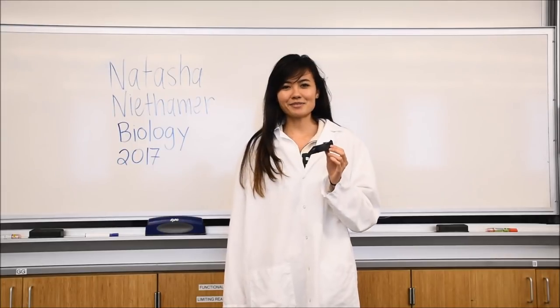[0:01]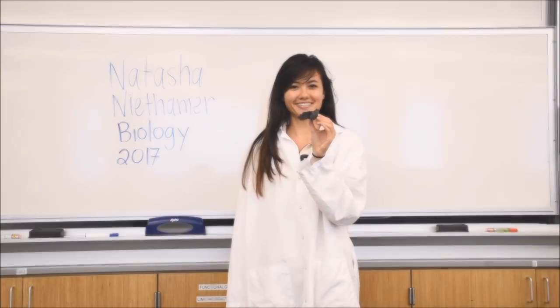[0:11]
Natasha Niethamer, and I am a biology major from the class of 2017. Today, I am going to be showing you how to assemble and use a cell phone spectrophotometer.
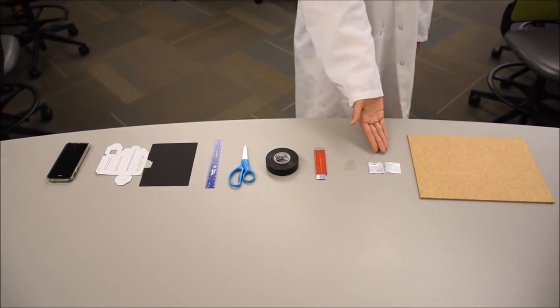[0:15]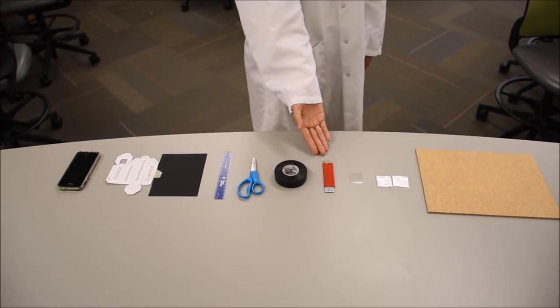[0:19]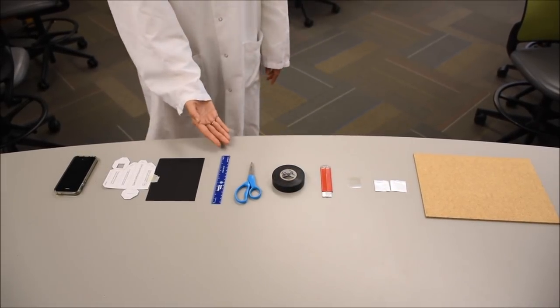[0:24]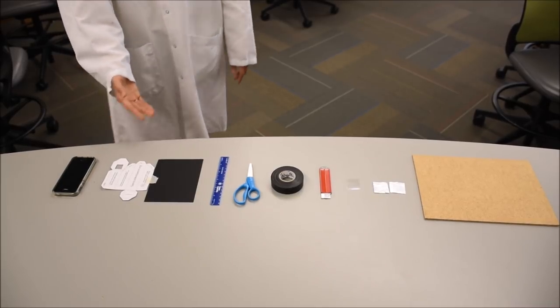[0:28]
Things you will need: cutting board, aluminum foils, diffraction grating, razor, electrical tape, scissors, ruler, black paper, template, last but not least, iPhone. Now, before we get started, it's absolutely crucial that if you decide to use a razor blade
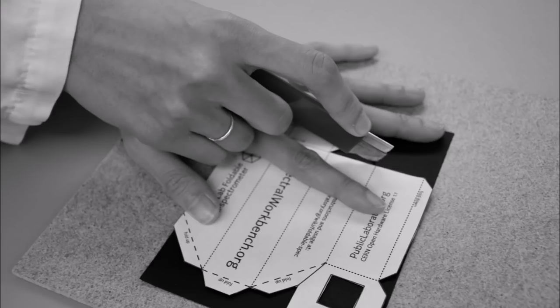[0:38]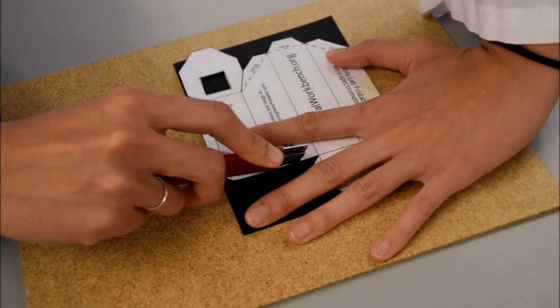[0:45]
to cut out your spectrophotometer, that you never cut towards yourself. If the blade slips, you will end up slicing your hand open. Always cut away from yourself. With that in mind, let's get started.
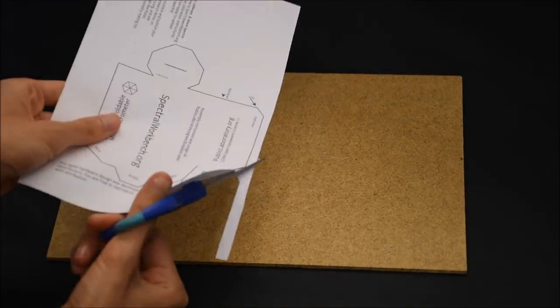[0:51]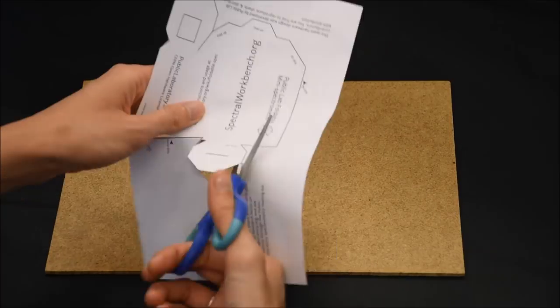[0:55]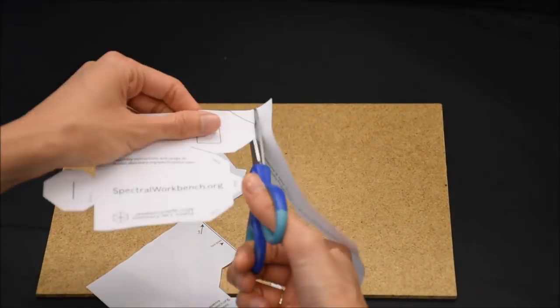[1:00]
The first step is to cut out the white template along the solid black lines as shown here. Be sure to cut accurately, as this outline will determine the shape of the final spectrometer.
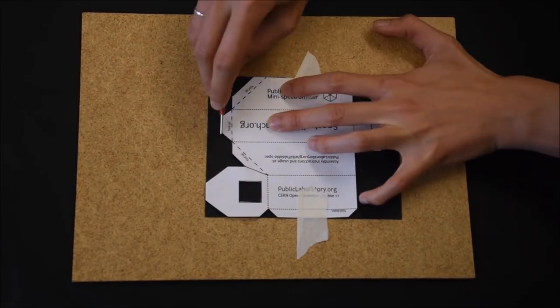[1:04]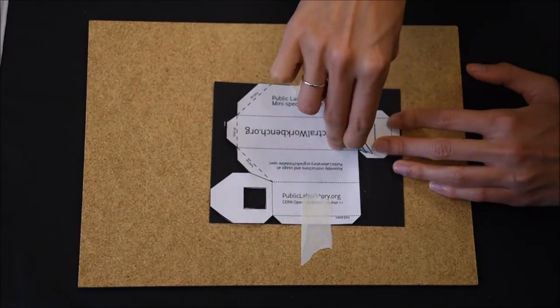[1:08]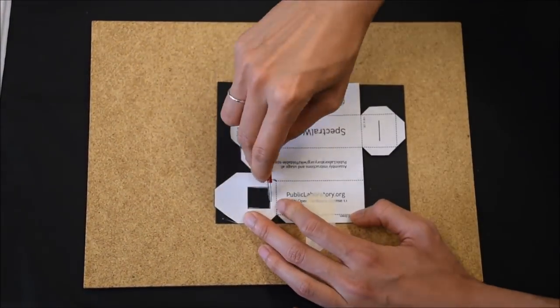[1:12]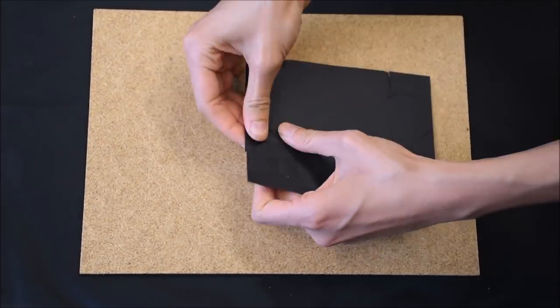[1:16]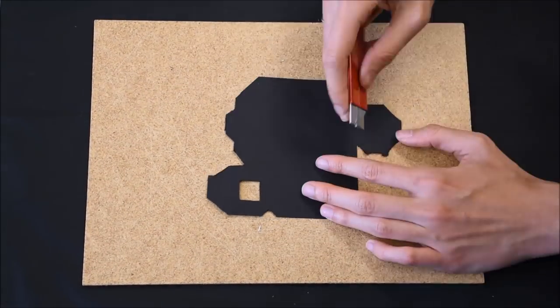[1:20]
The next step is to cut out the black paper along the white template. To make this step easier, tape both pieces of paper down and be sure that the paper is centered before cutting. Also be sure to adequately cut out the slit. We will make it narrower later. Finally, clean up any rough edges.
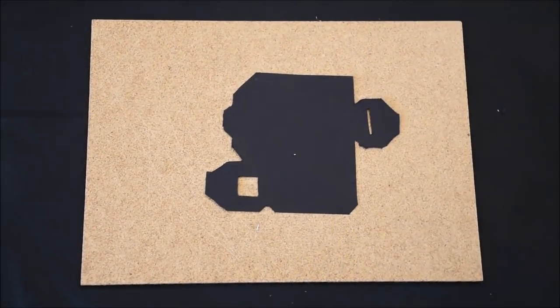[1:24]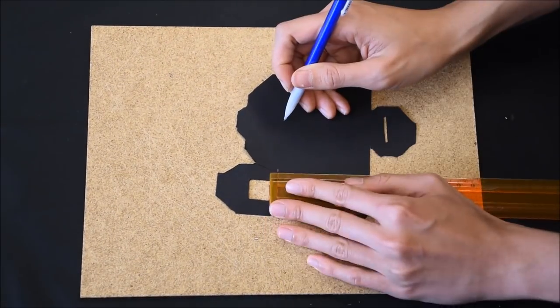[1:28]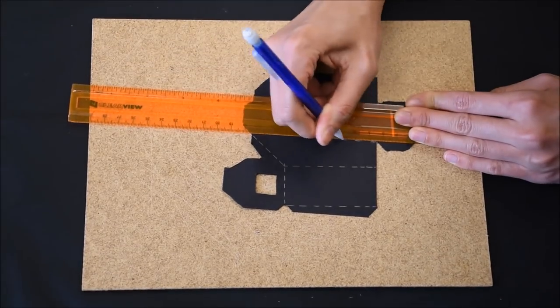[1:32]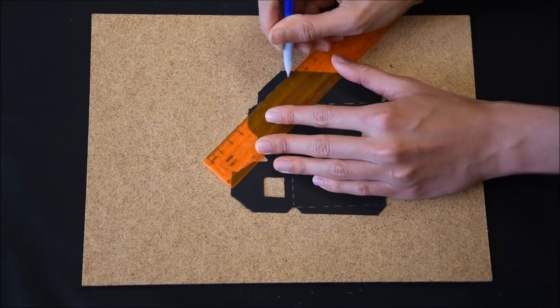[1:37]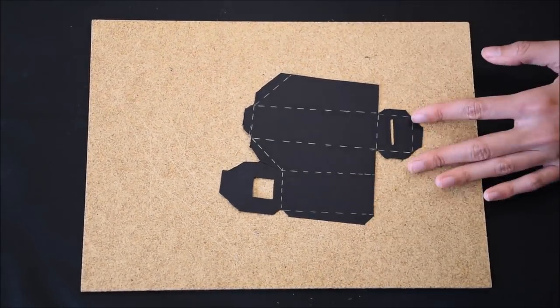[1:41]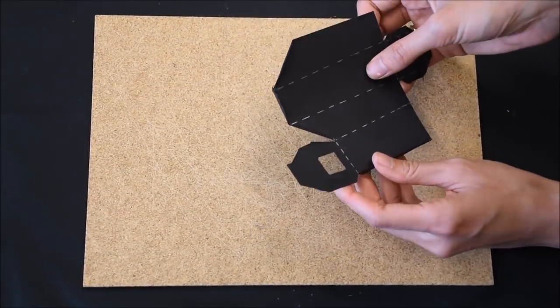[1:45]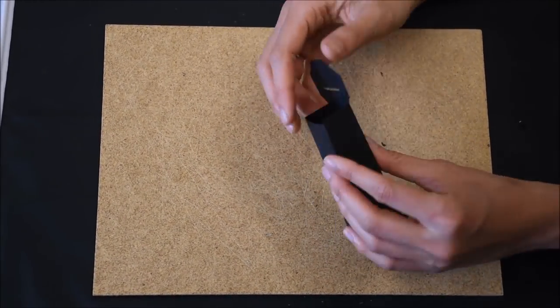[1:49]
Now, using the ruler, transfer the dashed lines from the white template to the black paper. Once all of the lines have been transferred, fold the black cutout along them in the directions outlined by the white template, and as shown here. For crisper, straighter folds, fold along the ruler and flatten the crease by pressing it with the back of your fingernail.
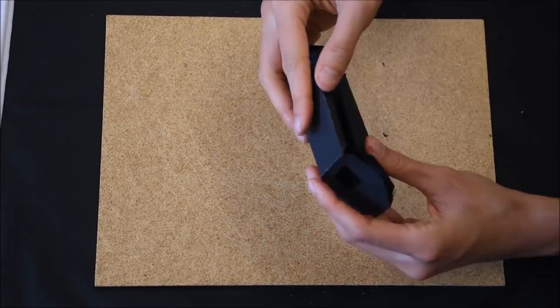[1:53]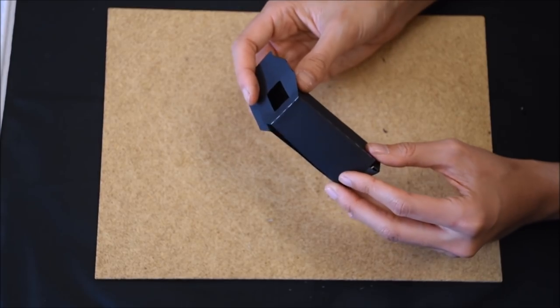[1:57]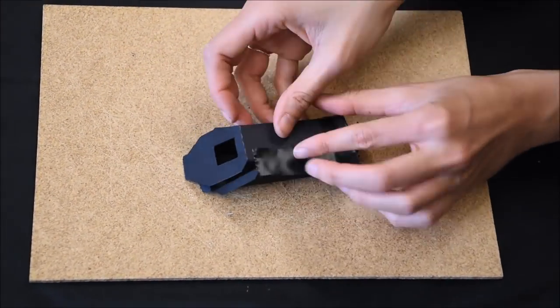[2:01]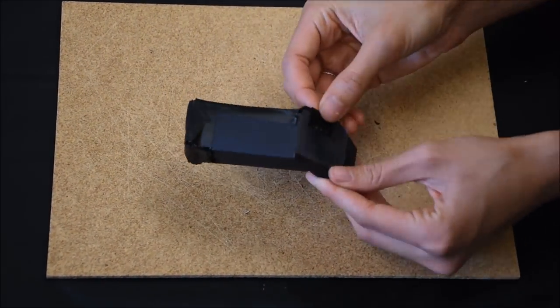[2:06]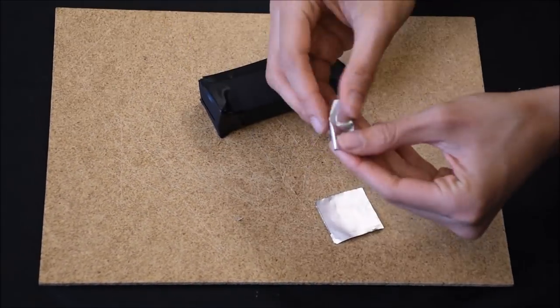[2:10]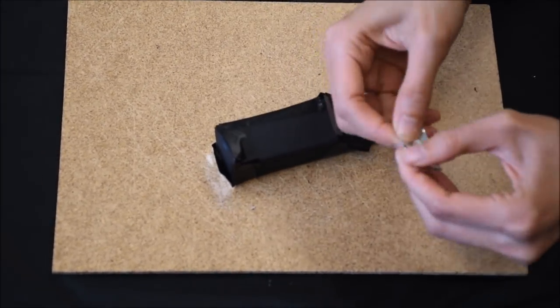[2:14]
With everything folded, tape up your spectrometer, saving the diffraction grating for last and making sure that no light can get in around the edges. Also, take the two squares of tin foil, fold them in half for a perfectly straight edge, and tape them to the front of the spectrometer to narrow the slit to about the thickness of a credit card.
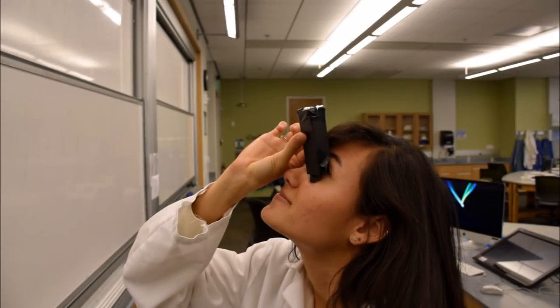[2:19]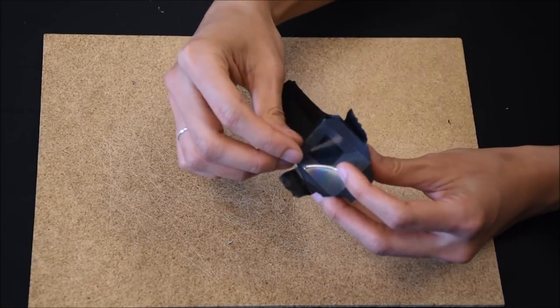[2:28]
With everything taped up, look through the window of the spectrometer at the studio lights. You should see something like this. If instead you see something like this, simply rotate the diffraction grating 90 degrees before taping it in place.
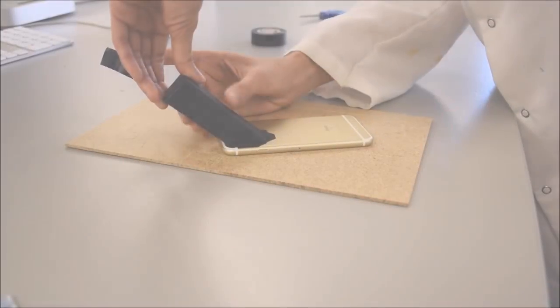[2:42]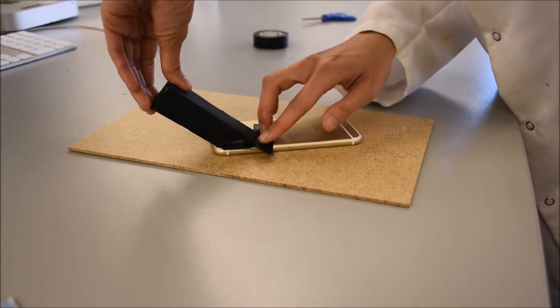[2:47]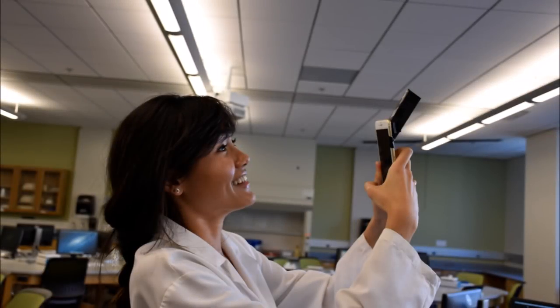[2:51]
Now remove your phone from its case, place the spectrometer on the camera, and open the camera application. With the spectrometer pointed at the studio lights, center the image and securely tape the spectrometer in place, making sure no light can get in around the edges. Your cell phone spectrometer is now ready to use.
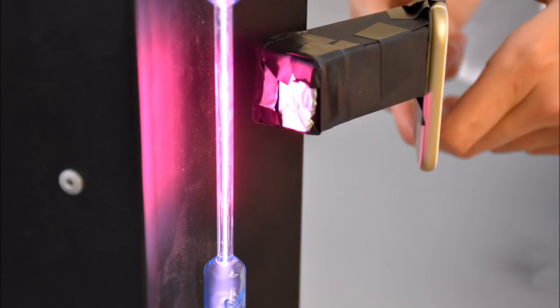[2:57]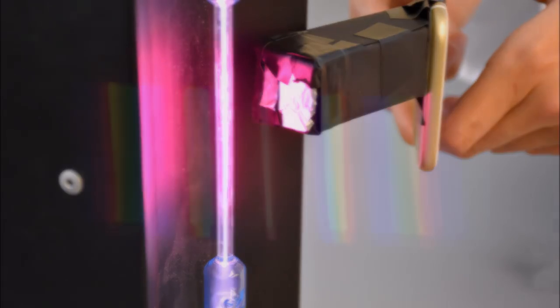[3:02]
When taking photos, don't be afraid to get close to the lamp. About an inch away is perfect. Also, be sure to keep the slit parallel to the lamp. Follow these steps, and your data is sure to be perfect.